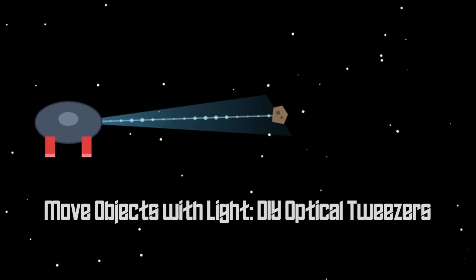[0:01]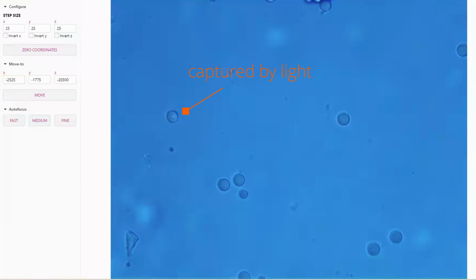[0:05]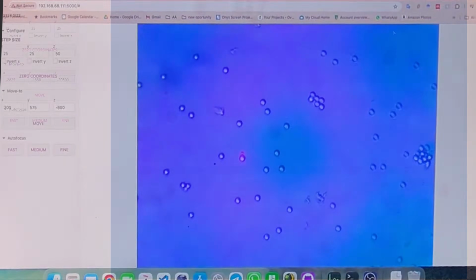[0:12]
What you saw was an optical tweezers that can be built for less than 400 euros. In this video, I'm going to show you how you can build your own device.
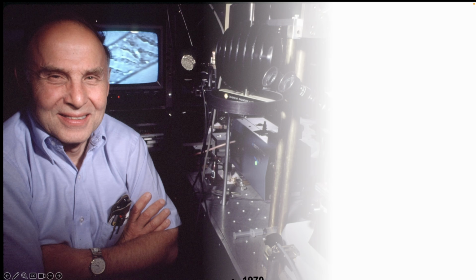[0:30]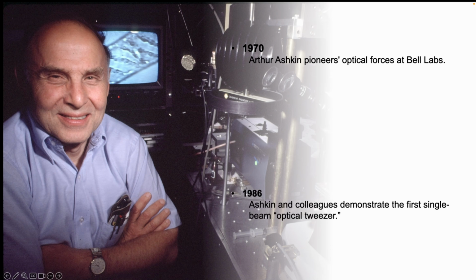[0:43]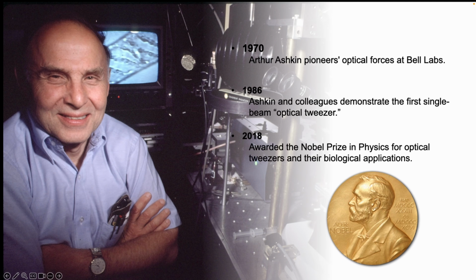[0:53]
A scientist named Arthur Ashkin was a pioneer in this field. In 1970, he showed that light carries momentum and can apply force to a small object. In 1986, he demonstrated the version of optical tweezers that we use today. After many years of application, especially in biology, he received the Nobel Prize in 2018. He's a very important figure in this field, and if you like science stories, I highly recommend watching his Nobel talk in Aspen. I've put the link in the description below.
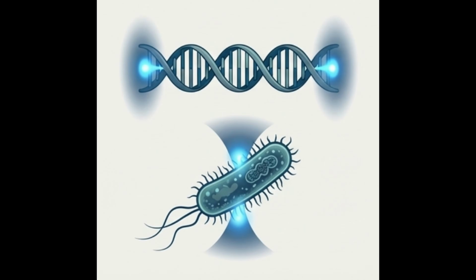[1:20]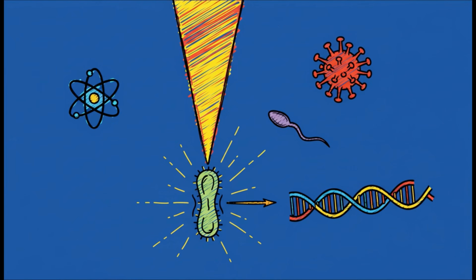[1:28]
It might look like science fiction, a bit like tractor beams in Star Trek. It's amazing that you can move objects just with light. In Ashkin's own description, it's just the focus of a light. With optical tweezers, you can trap anything, a biological sample, even a single atom. The great feature is that it's very gentle. You can trap a single cell, blood cell, bacteria, or sperm cells without damaging them.
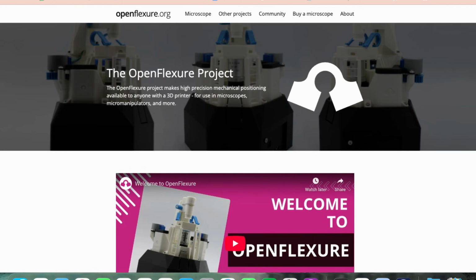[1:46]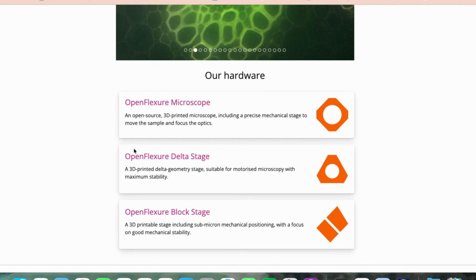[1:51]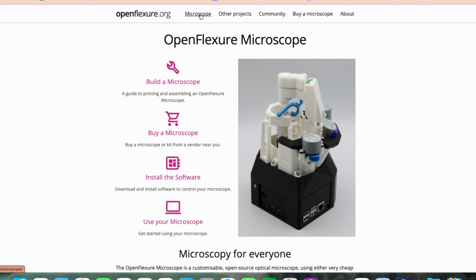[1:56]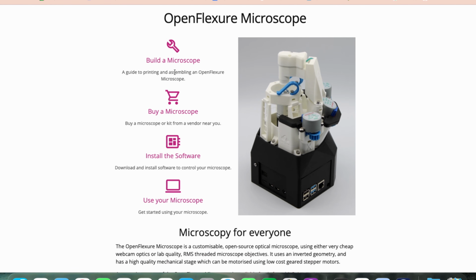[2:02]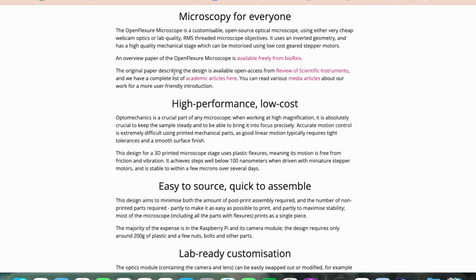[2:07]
But the thing is, these objects are usually too small, 10 times smaller than a human hair, so they're invisible to the naked eye. Therefore, you need a microscope to observe them. To build our optical tweezers, we use the OpenFlexure platform, which is an open source 3D printed microscope. It's developed by a great community and it's used all over the world. It's super stable. There is a lot of documentation that shows you step by step how to build one for around 300 euro.
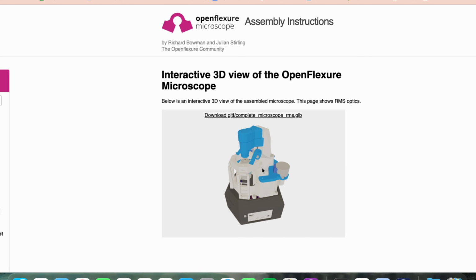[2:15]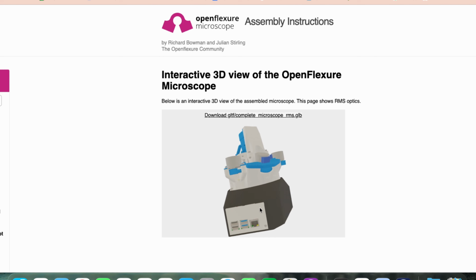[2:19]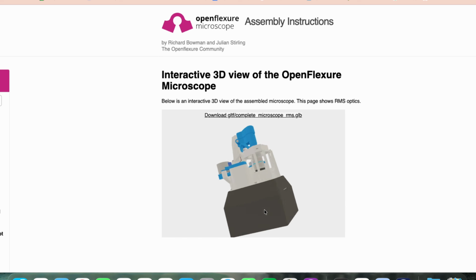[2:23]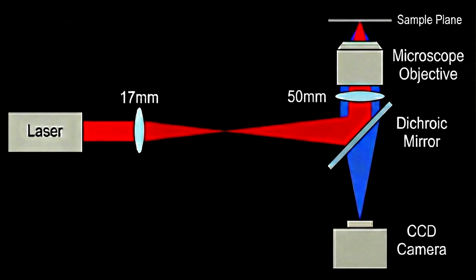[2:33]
If you go to the microscope tab, you see the 3D view of this design. The link is in the description below, but I want to show you that we use the back port of the microscope to add our laser for the optical tweezers. Here you can see a schematic of the design. The blue part shows the normal microscope light. The red path shows the light for the optical tweezers.
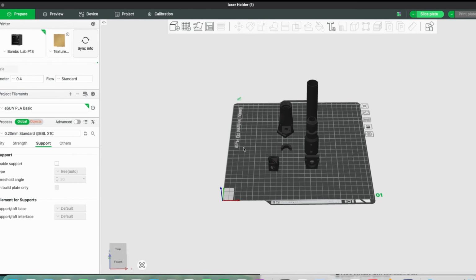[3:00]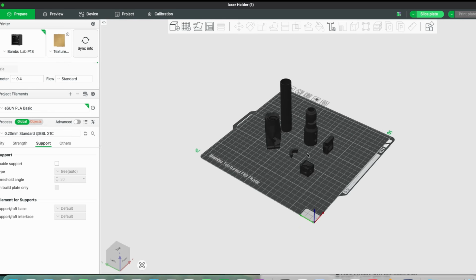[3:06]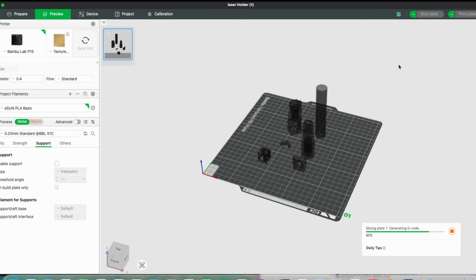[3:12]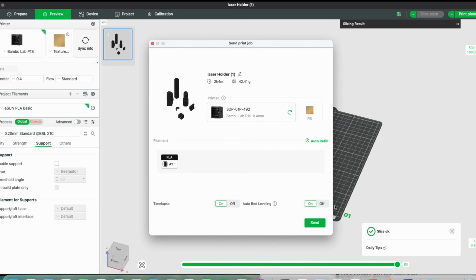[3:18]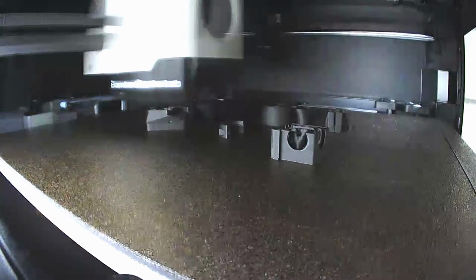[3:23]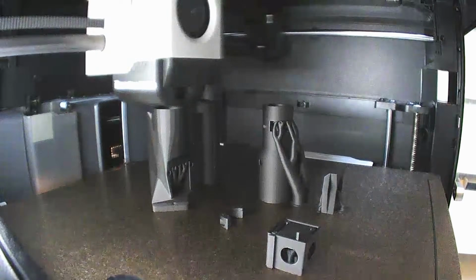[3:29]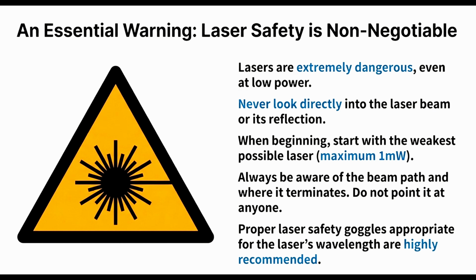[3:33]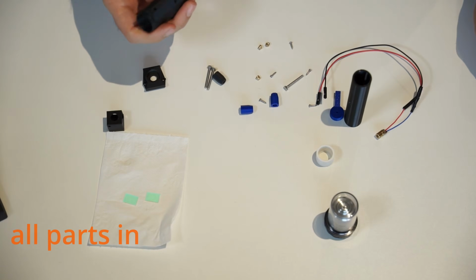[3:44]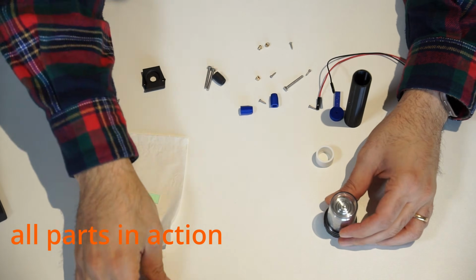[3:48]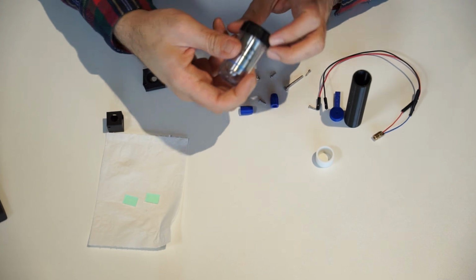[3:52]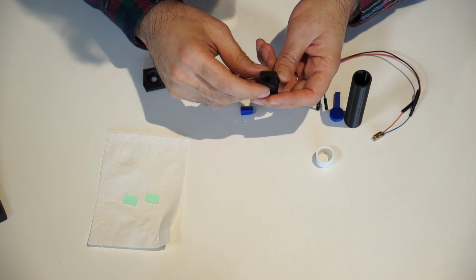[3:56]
Before we dive into the assembly, I need to talk about something important: laser safety. Never directly look at the laser beam, and please do not use more than 1 milliwatt of laser power. First, clean the printed parts so there is no support or debris. Here we use a 60x objective lens from a Chinese manufacturer that costs around 50 to 60 euro.
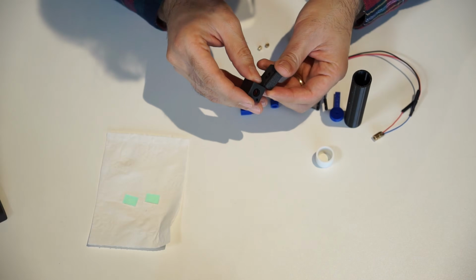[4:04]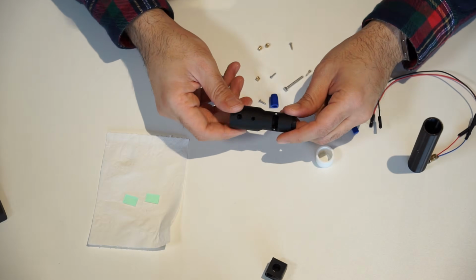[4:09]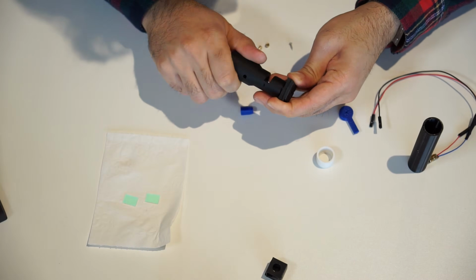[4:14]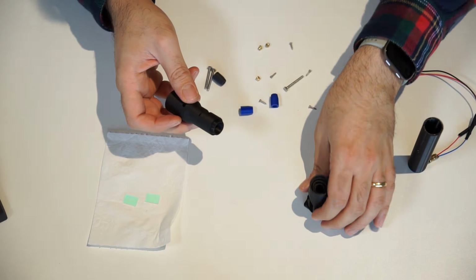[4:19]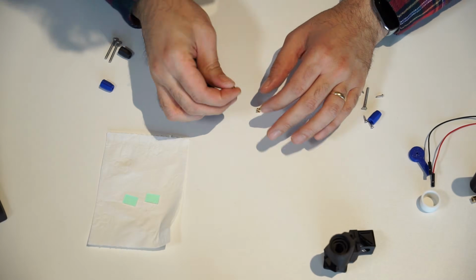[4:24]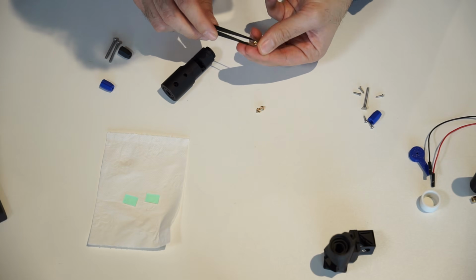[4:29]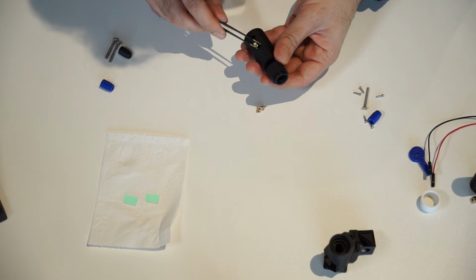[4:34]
For the printed parts, it's a good idea to check that all the parts fit together properly before going further. The cube, for instance, has a sliding mechanism into the coupler. The other side of the coupler is a thread that fits into the laser holder. The laser holder is actually designed with two parallel tubes. The inner tube is where we mount the laser, and the outer tube acts as a reference tube to adjust the laser angle. These two tubes are connected by a few flexible joints such that it gives us a few degrees of control on the alignment.
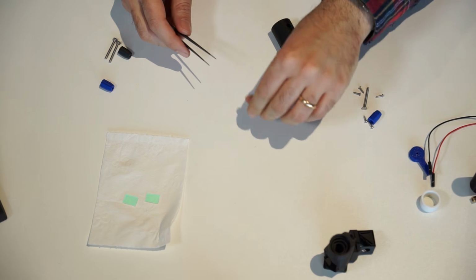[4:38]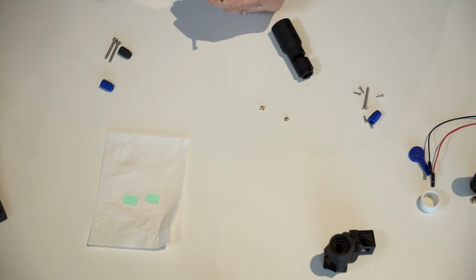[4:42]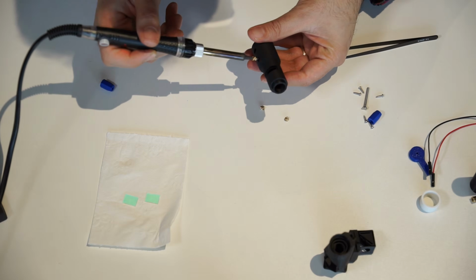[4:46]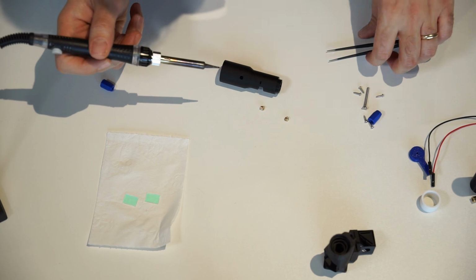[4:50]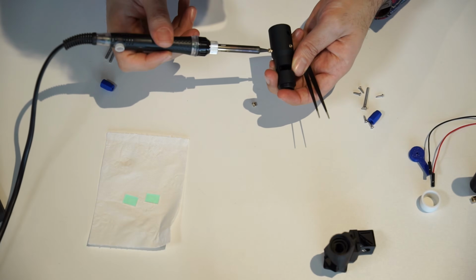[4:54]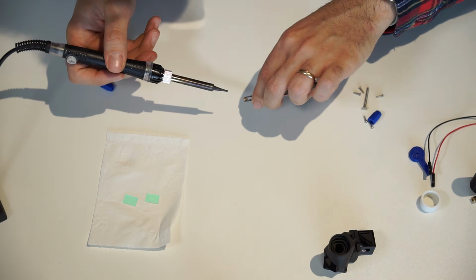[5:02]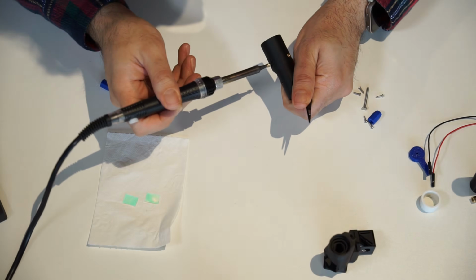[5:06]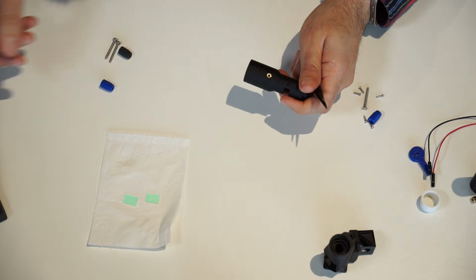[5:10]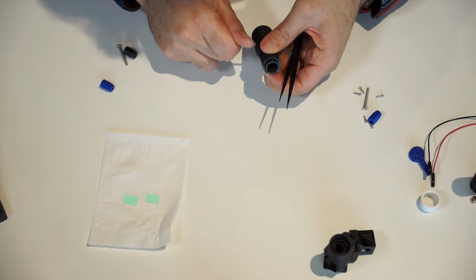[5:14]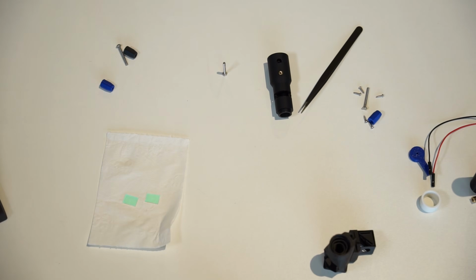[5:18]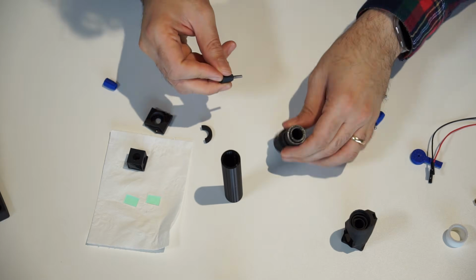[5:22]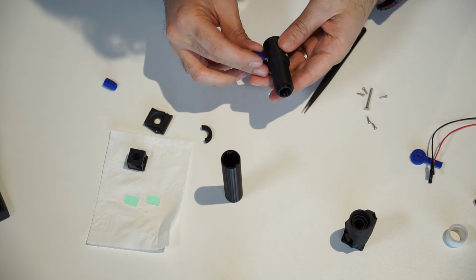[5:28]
To get better control over the laser alignment, we use heat-set insert nuts. I actually find it easier to heat the insert nut with a soldering iron and gently push it into the laser holder. You need 3 of them, every 120 degrees, and you should not push too much, to avoid damaging the plastic parts. And the last one. There you go. Now you can check all of them with a screw to make sure they are not blocked or clogged. These are the same types of screw that have been used in the microscope leg and the condenser part, and the same type of thumb screw has been used as well.
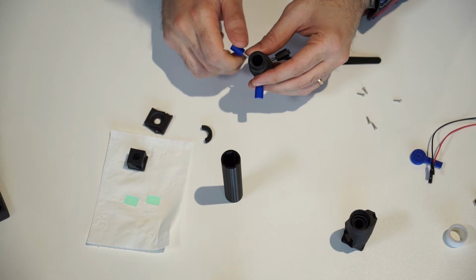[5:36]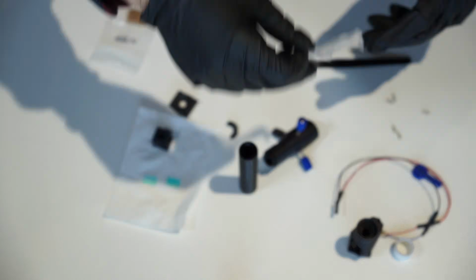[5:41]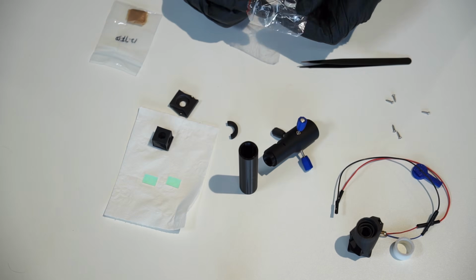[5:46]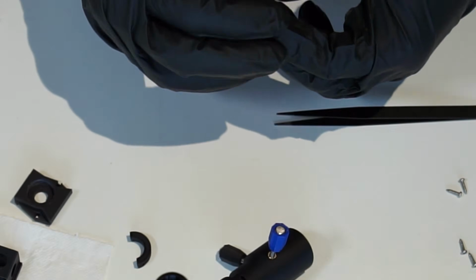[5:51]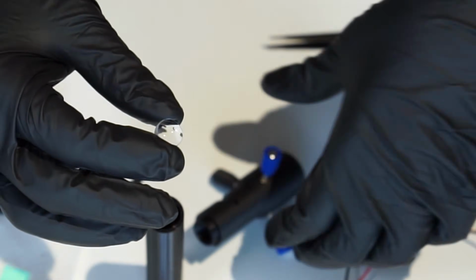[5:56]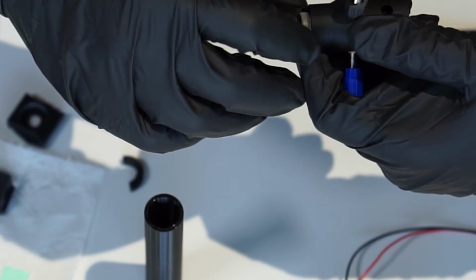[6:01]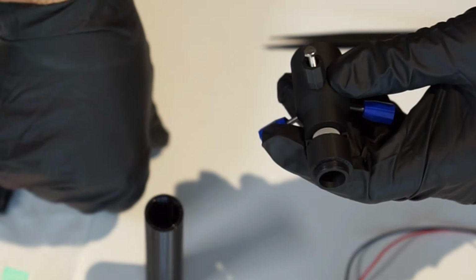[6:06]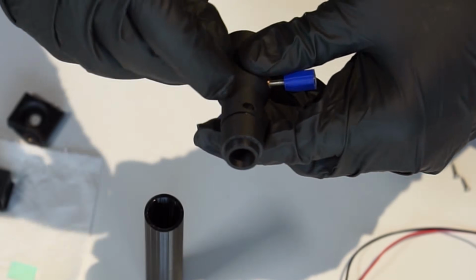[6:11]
Now is the time for the optics. We need two lenses and a dichroic mirror. First, we use a 1/2 inch doublet lens with 17mm focal length. They have a curved side and a flatter side, and the rule is the curved side should face the collimated beam, basically the incoming laser light. After placing the lens, put the lens cap in and fix it into place. The screws just need to be loose, not pushing anything.
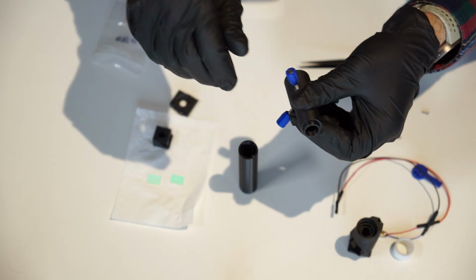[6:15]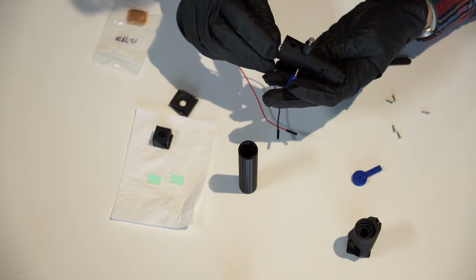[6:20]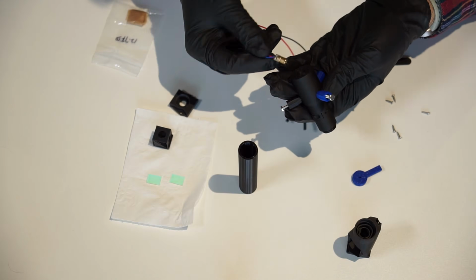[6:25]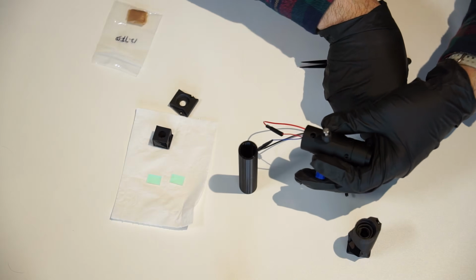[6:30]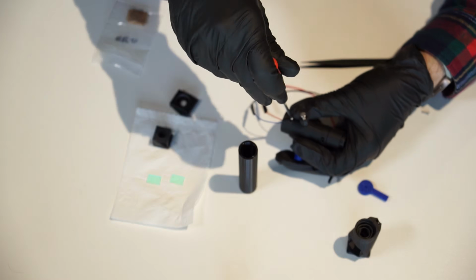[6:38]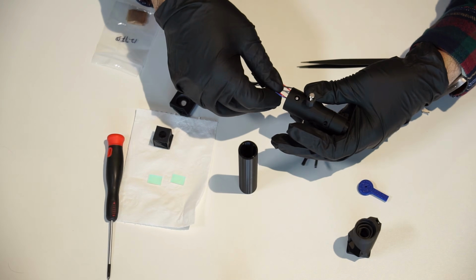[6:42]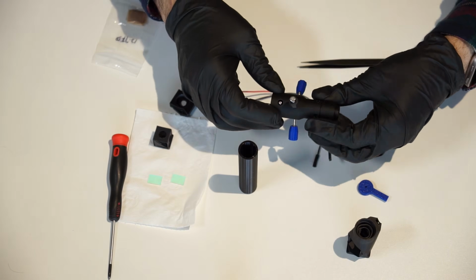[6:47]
Good. Next is the laser. We use a 6mm diameter red laser pointer with a wavelength of 635 nanometers and a maximum of 1 mW. They are pretty cheap, about 50 cents each. Fix the laser in the holder with the M2 tap screw. The laser should not move anymore and just needs to be fixed in position. If the laser doesn't move, the laser holder is ready and we move to the cube.
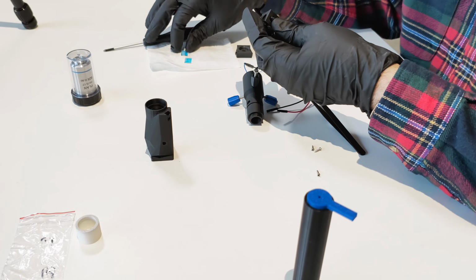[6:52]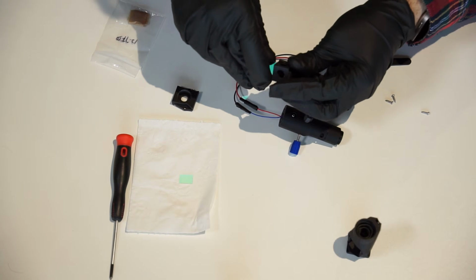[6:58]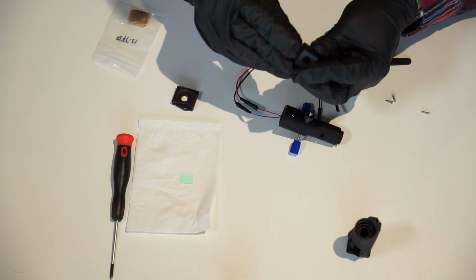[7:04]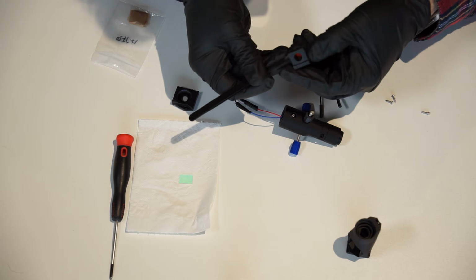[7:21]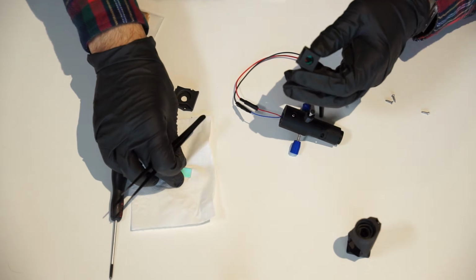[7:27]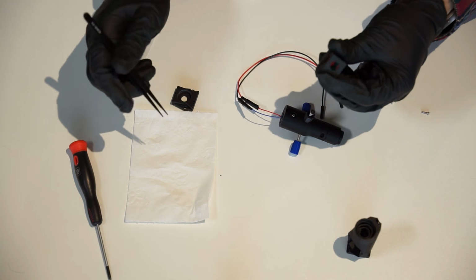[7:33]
The cube has two slots for the optics, a dichroic mirror and a filter. The dichroic mirror is chosen to match the laser wavelength. In this case, it reflects red light and transmits blue and green. I found them pretty cheap on AliExpress, about €1 each. It's good to mention that dichroic mirrors have two sides. The coated side has better efficiency, and you can usually find it with a phone light or flashlight. Try to place the dichroic mirror in the middle of the light path, or in the middle of the holes.
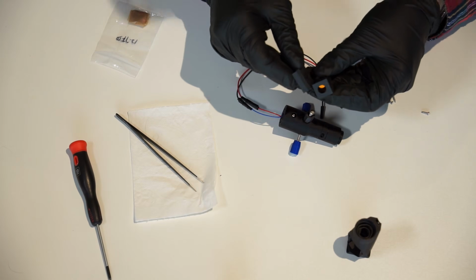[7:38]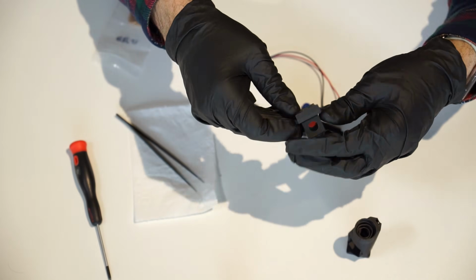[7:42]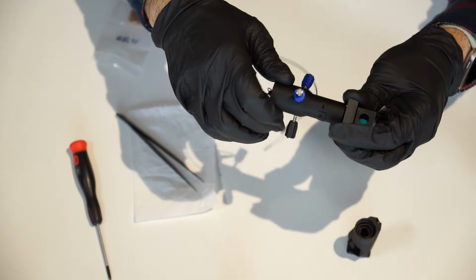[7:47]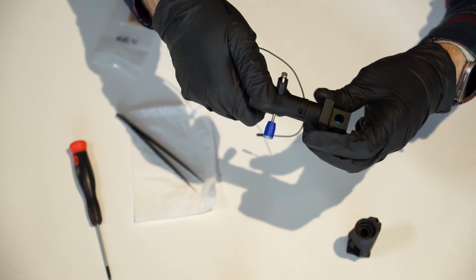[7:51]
We noticed actually quite a lot of back reflection into the camera, so we decided to use two dichroic mirrors. One acts as the main mirror and the second one works as a filter. If you can, it's better to use a proper filter actually.
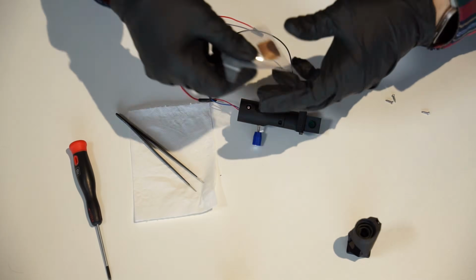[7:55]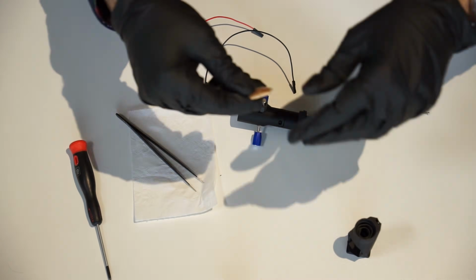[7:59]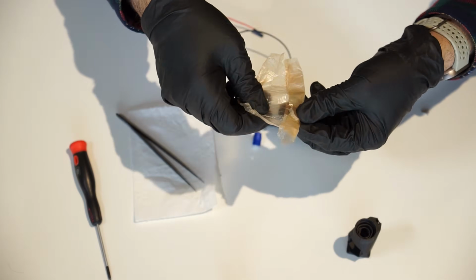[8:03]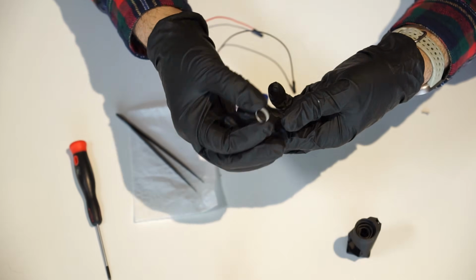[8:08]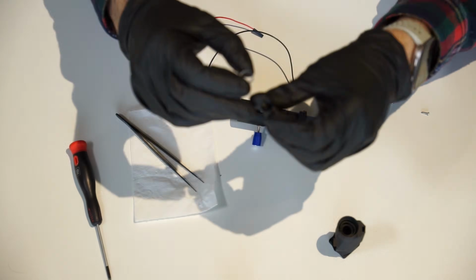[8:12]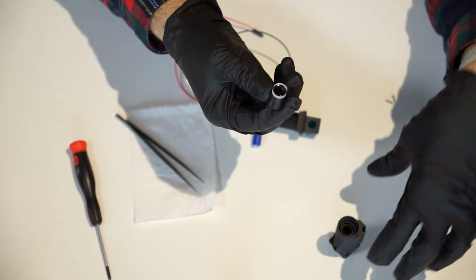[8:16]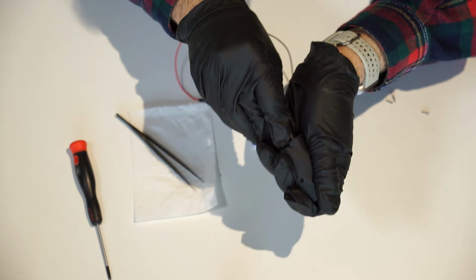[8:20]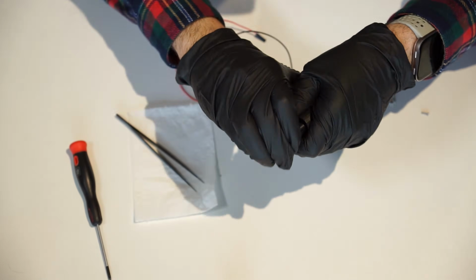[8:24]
Now it's time for the 1/2 inch 50mm focal lens, exactly as described in the OpenFlexure high-resolution microscope design. It helps us to collimate our laser light, and as the rule said, the curved side must face the collimated light. So in this case, the curved side needs to be on the top, or opposite of the laser direction.
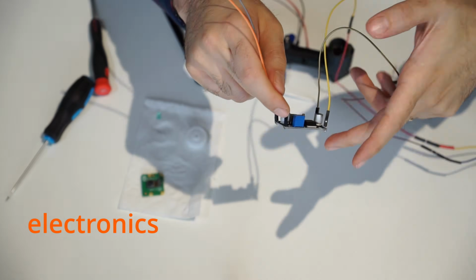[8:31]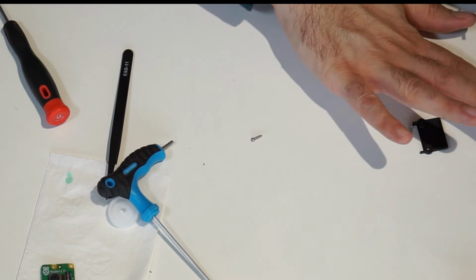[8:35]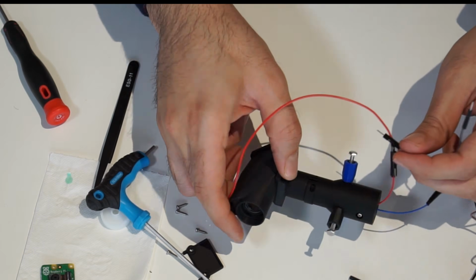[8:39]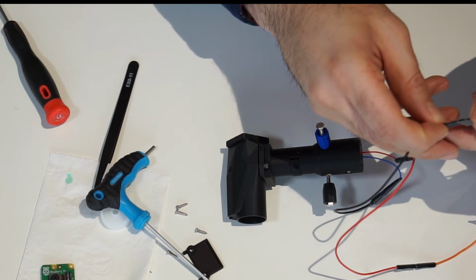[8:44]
We actually do not have so many electronics. Some of these cheap laser modules do not run on exactly 5 volts. With a DC-DC converter, you can adjust the voltage to what the laser needs. Optionally, you can place a key to have control on turning the laser on and off.
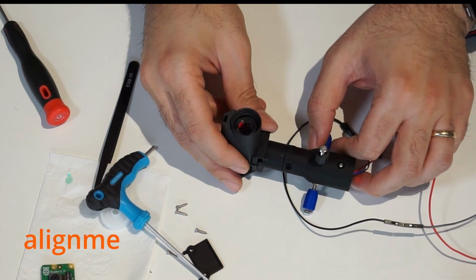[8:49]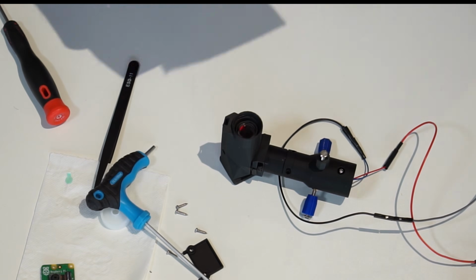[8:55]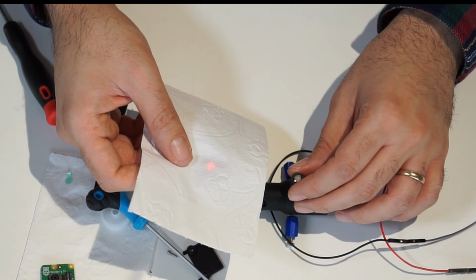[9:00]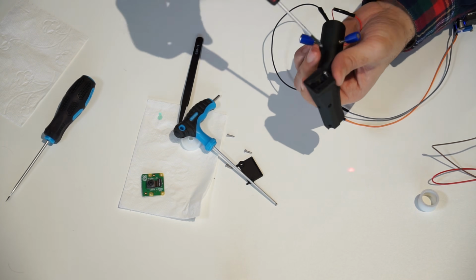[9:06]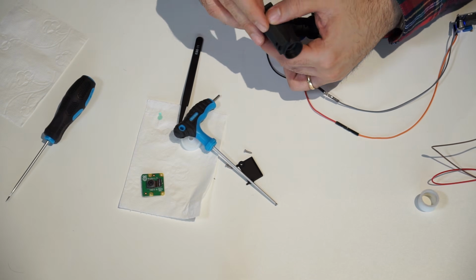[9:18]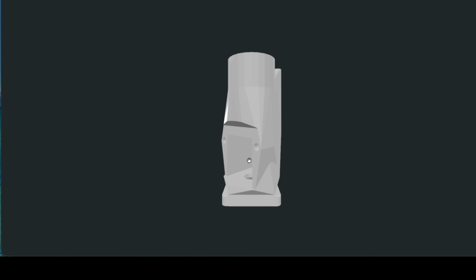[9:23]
The fun part starts. At first, the laser spot looks off to the side. Our goal is to center the laser in the optical module so that the beam enters the back of the objective lens and travels straight along its axis. To do so, we align the beam at 2 points to make sure that the light travels in parallel to the objective lens. To properly control a beam, we usually need 2 degrees of freedom. We found that just moving the laser itself is not enough, so we designed the cube to be slightly flexible too, and with 2 M2 screws, we can adjust the angle of the dichroic mirror.
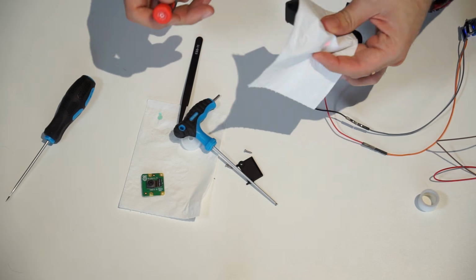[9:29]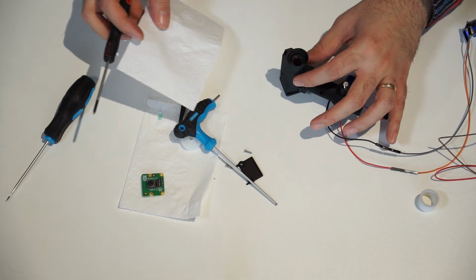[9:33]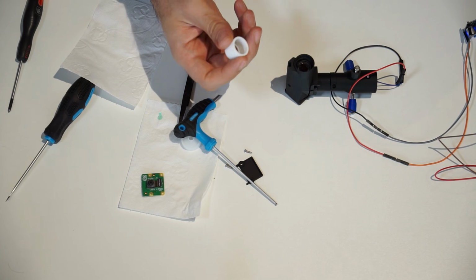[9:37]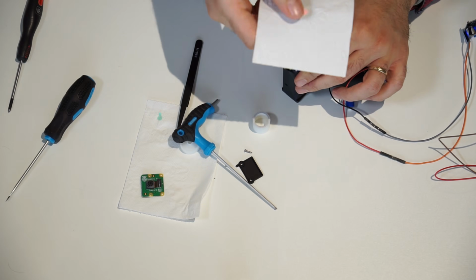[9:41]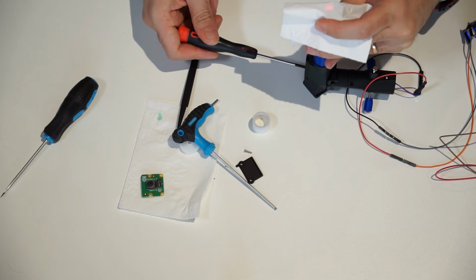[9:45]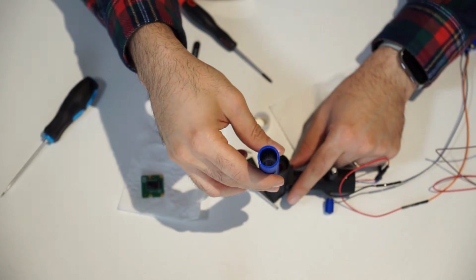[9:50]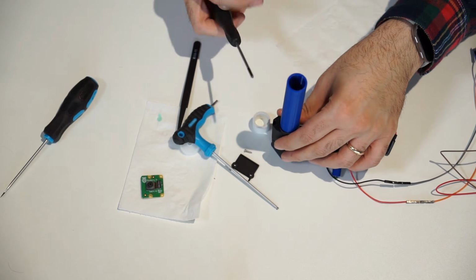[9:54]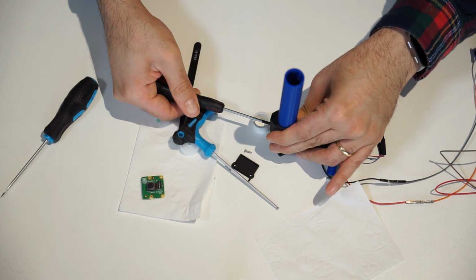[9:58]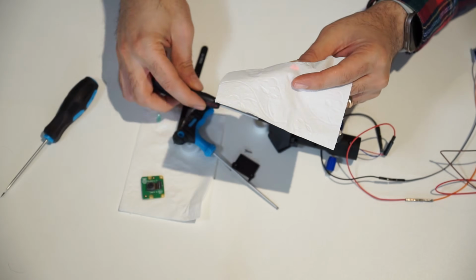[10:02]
Now we need the alignment tubes. Place them in place of the objective lens. With the long tube, you align the beam at the further point, or the cube part, with the 2 M2 screws, and then closer to the lens, you should center the beam with the 3 screws on the laser holder. You at least need to repeat the process a couple of times until you make sure the laser is centered in both the short and long tube.
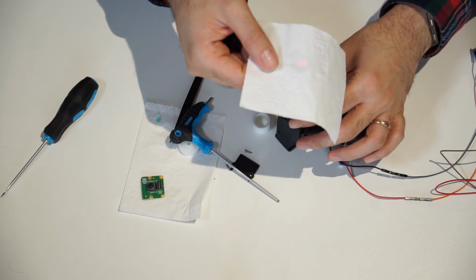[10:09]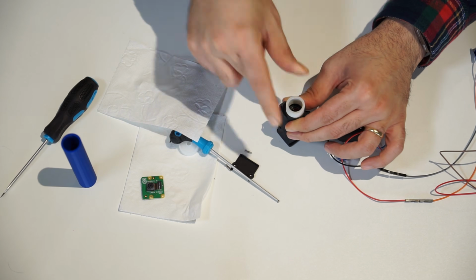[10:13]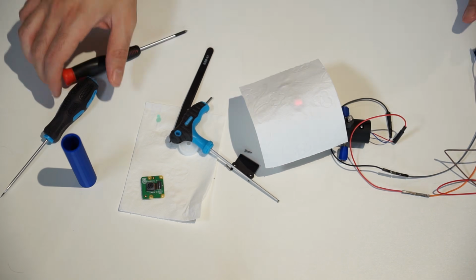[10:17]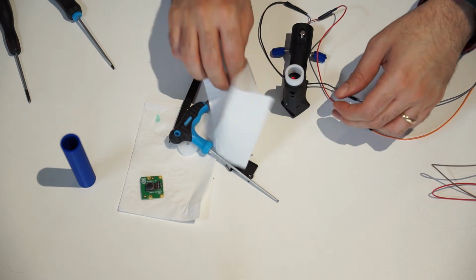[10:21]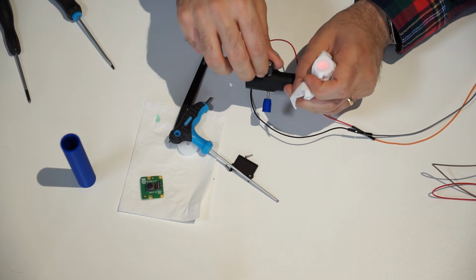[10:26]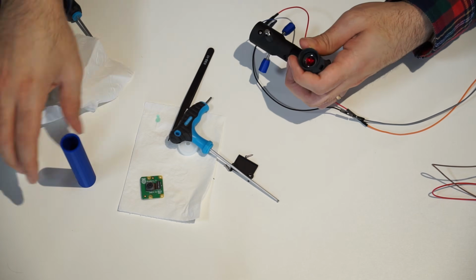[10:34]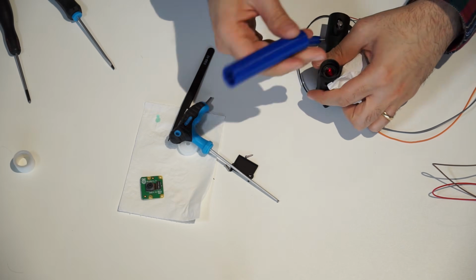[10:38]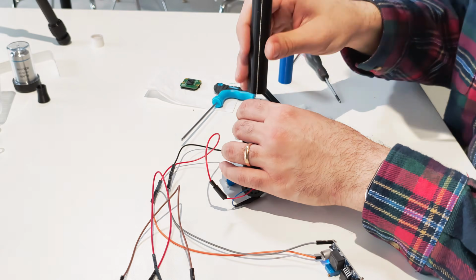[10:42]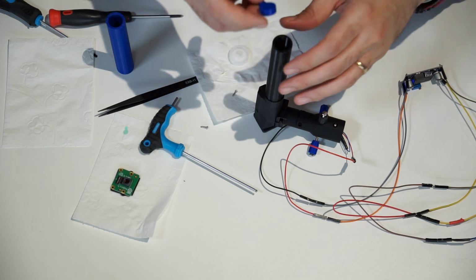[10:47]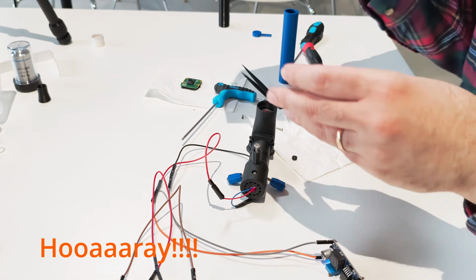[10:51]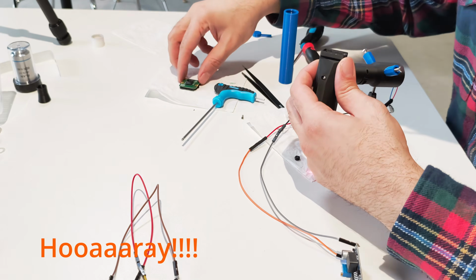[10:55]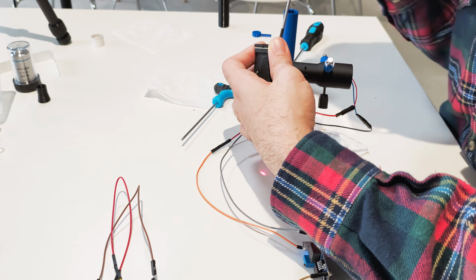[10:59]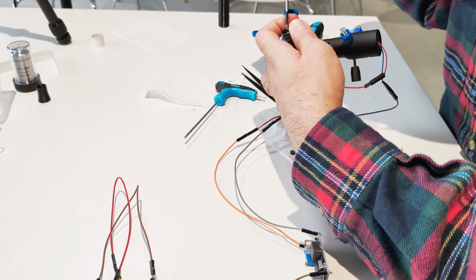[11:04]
For better precision, you can print an alignment tube with a 1mm pinhole and a small cap where you can reach better accuracy. If the laser passes through both pinholes, your beam is well aligned. Once the alignment is done, you can put the camera in exactly how it is explained on the OpenFlexure website.
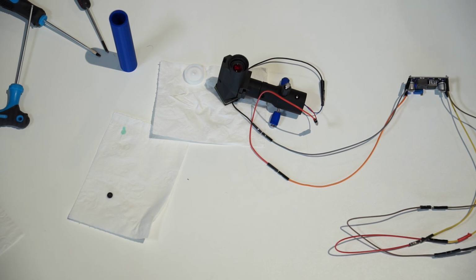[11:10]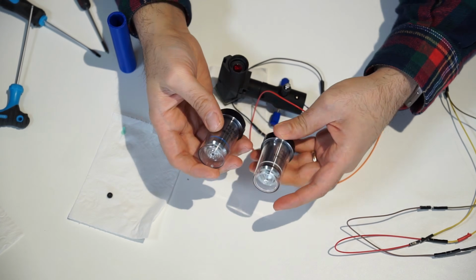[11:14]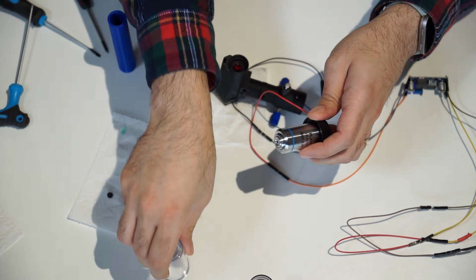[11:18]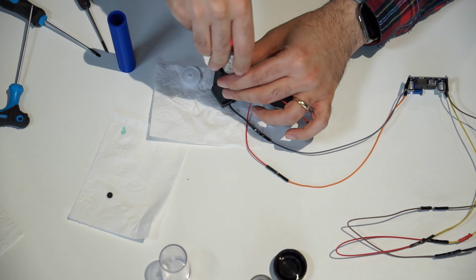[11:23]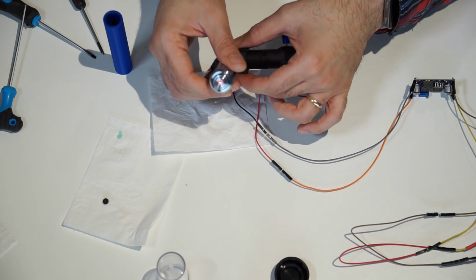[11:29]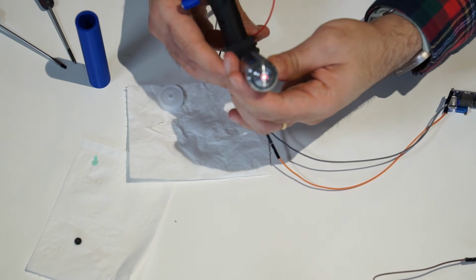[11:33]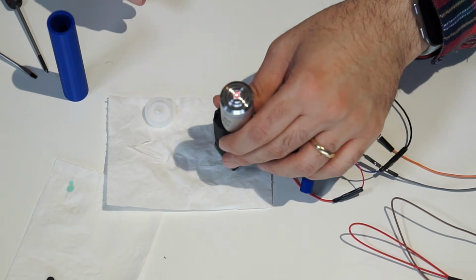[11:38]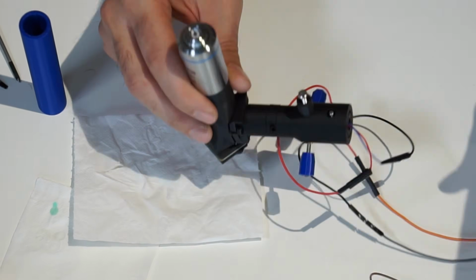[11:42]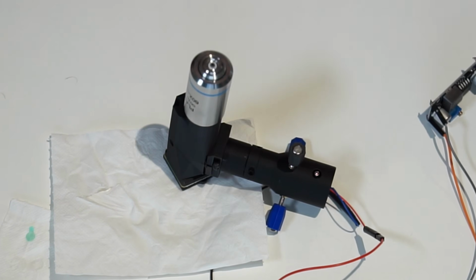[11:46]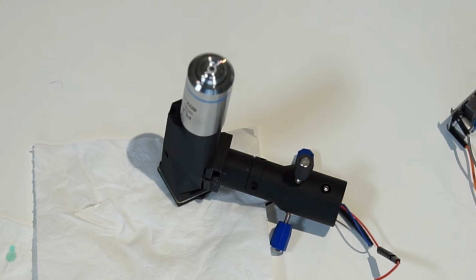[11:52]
I'm using a 60x objective lens because it's more convenient, but a 100x oil immersion lens gives you a tighter focus of the beam, so a stronger trap. A small fact: objective lenses are color coded, 100x has a white ring and 60x has a blue ring. The objective lens is really the heart of this microscope. The high quality ones from major brands can be very expensive, but we got quite good results with these Chinese infinity corrected plan objectives. For an optical trap, you usually want to have at least numerical aperture 0.8. That gives you a focus spot around 1 micron in size for a red laser.
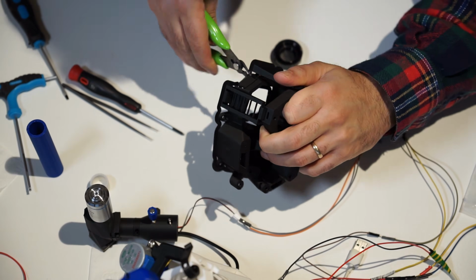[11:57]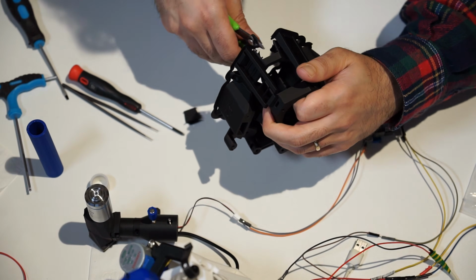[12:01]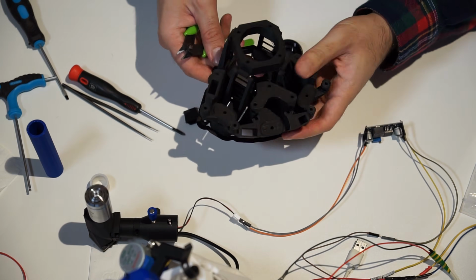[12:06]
I'm assuming you already have your OpenFlexure microscope built. To make space for the laser holder, you just need to cut away the extra plastic around the side of the port in the main body and the base.
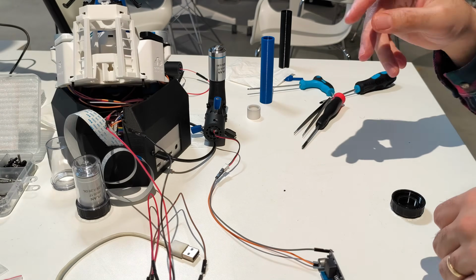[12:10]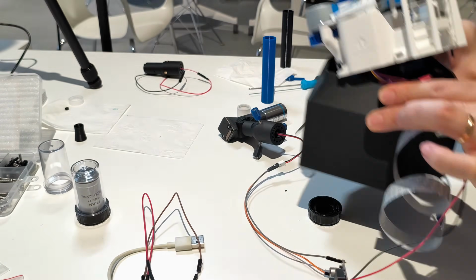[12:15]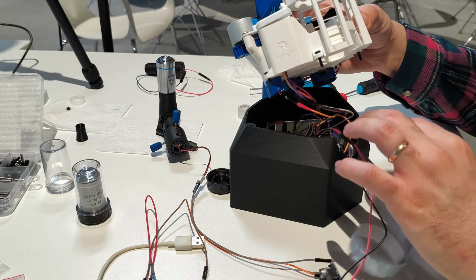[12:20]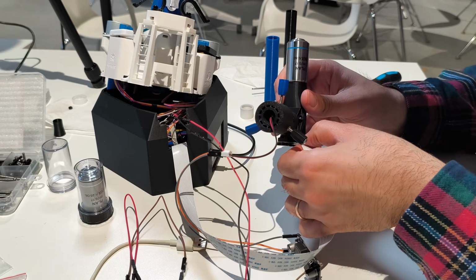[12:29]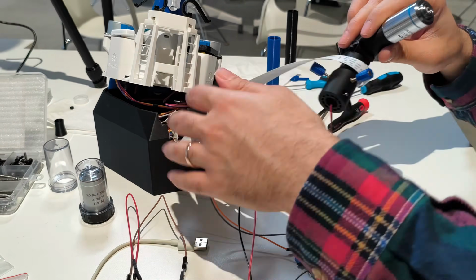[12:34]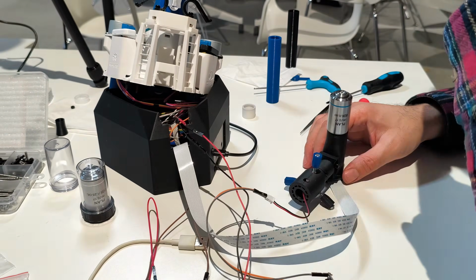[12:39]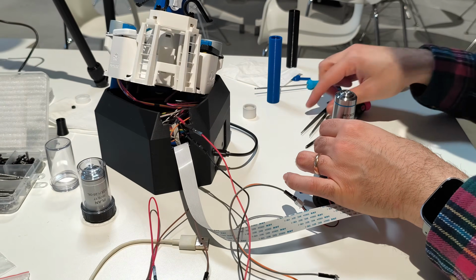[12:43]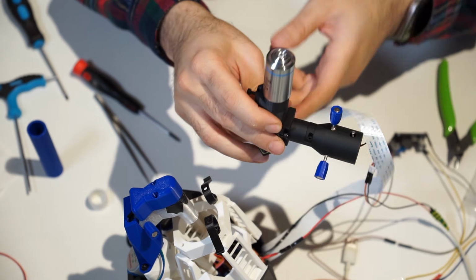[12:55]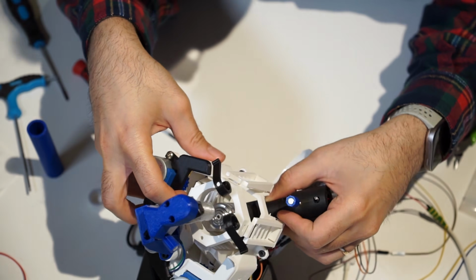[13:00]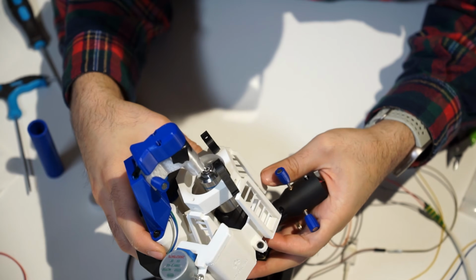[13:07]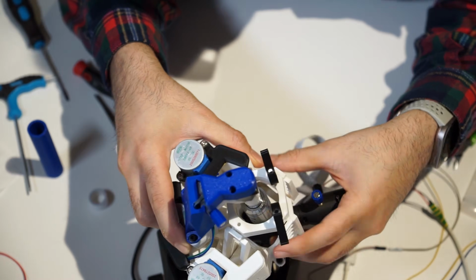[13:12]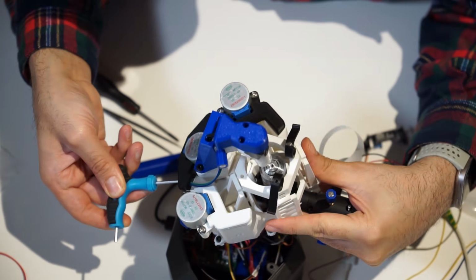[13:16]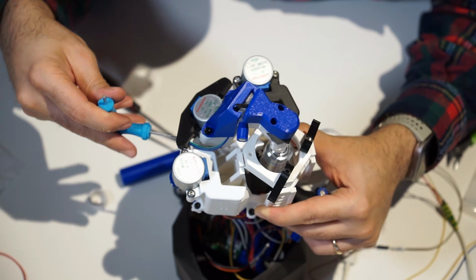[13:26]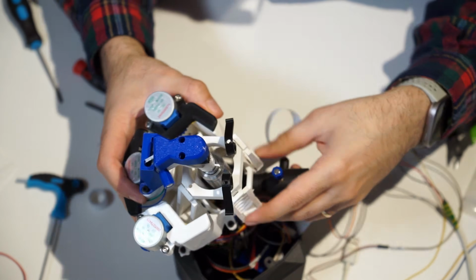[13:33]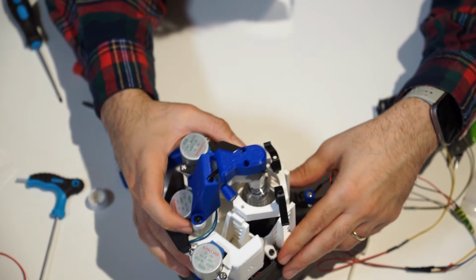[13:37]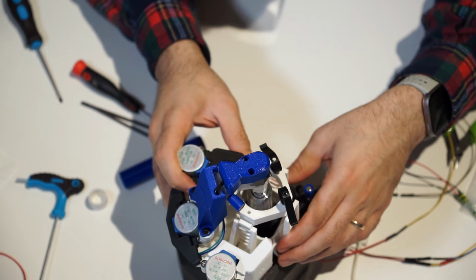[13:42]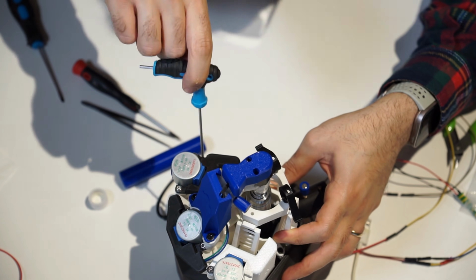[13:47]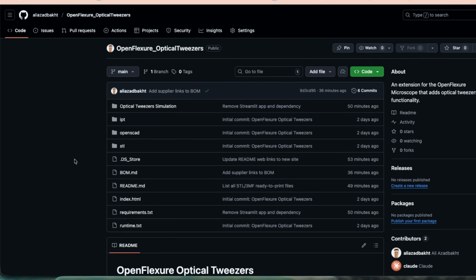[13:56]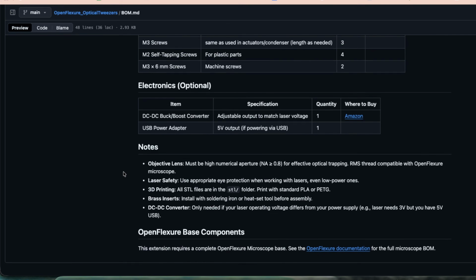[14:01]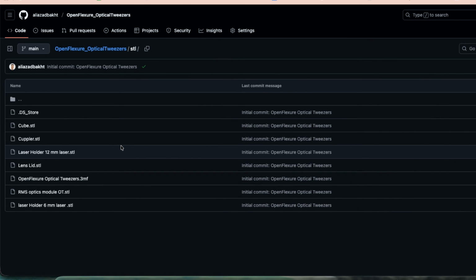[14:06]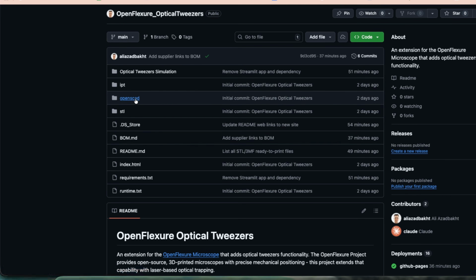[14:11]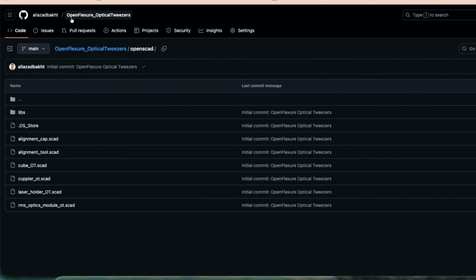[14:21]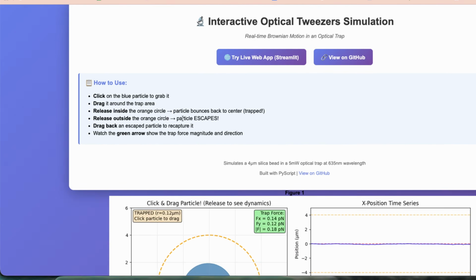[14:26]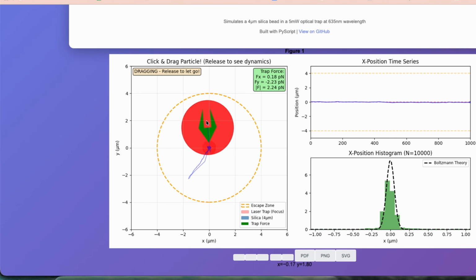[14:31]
We listed all the required parts and the bill of materials with the links where you can buy them on our GitHub page. You can also find the SCAD, STL, and IPT files for the print. Keep in mind that the SCAD files use libraries from OpenFlexure and ThreadSCAD, so you need to download them and put them in one place. We also made a very small simulation that shows Brownian motion of the trapped particle and the forces acting on it.
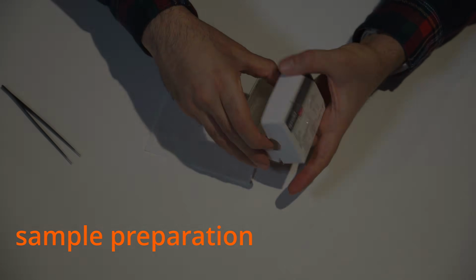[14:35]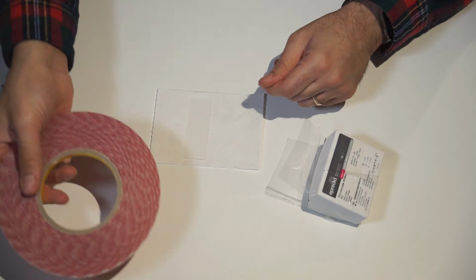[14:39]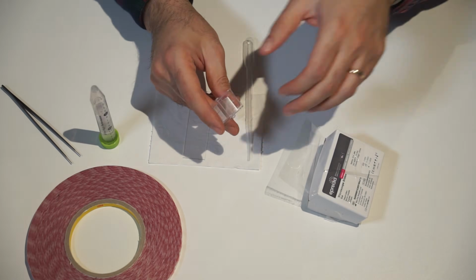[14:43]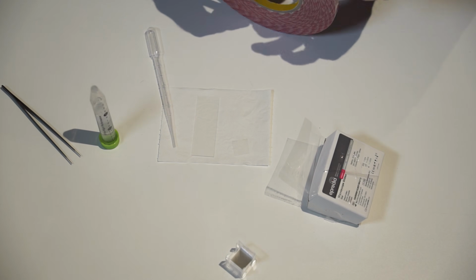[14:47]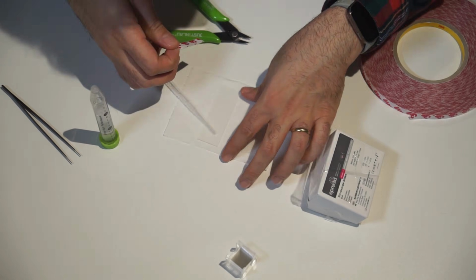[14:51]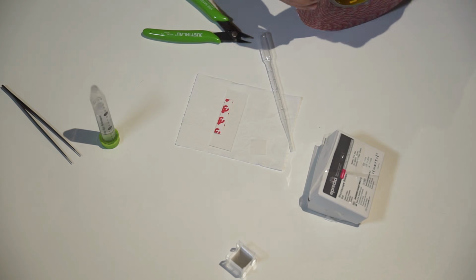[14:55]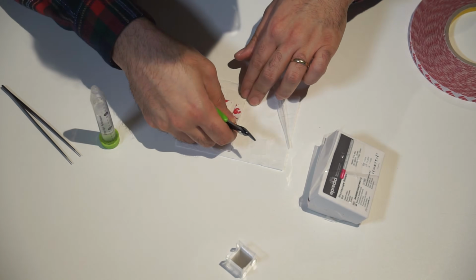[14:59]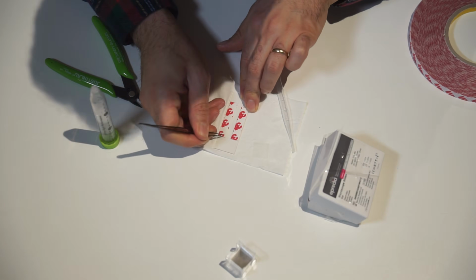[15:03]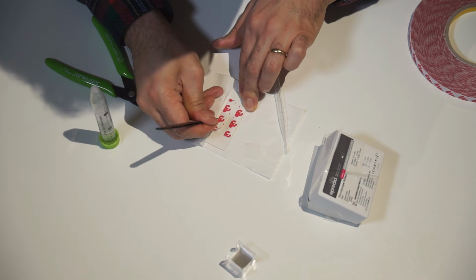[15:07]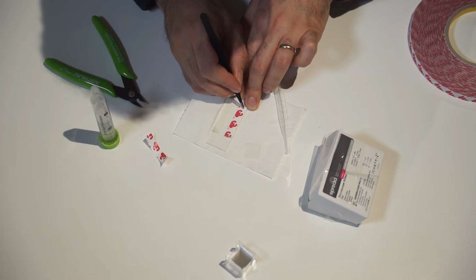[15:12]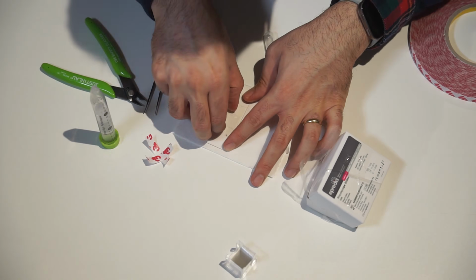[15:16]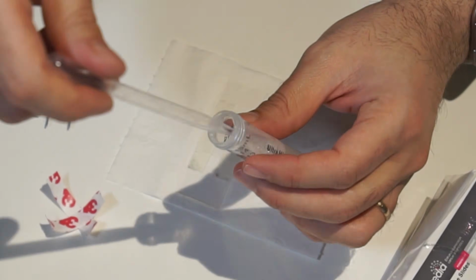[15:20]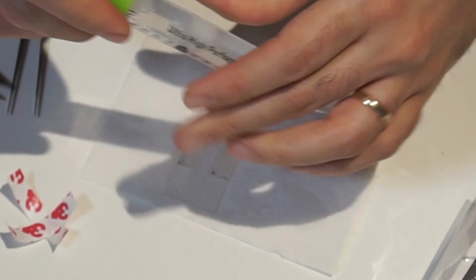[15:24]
Now I will show you how to prepare a sample. For that you need a microscope slide, a cover glass, ideally cover slip number 1.5 because most of the objectives are optimized for that thickness, and double-sided tape. We use the tape to create a small spacer on the slide. Then place the cover slip on the tape. This creates a very thin chamber between the slide and the cover slip. If you put a droplet of your sample at the edge of the cover slip, it will flow into your sample by capillary action. In this example, our sample is a small colloidal bead about 4 micrometers in diameter made of silicon oxide in normal tap water.
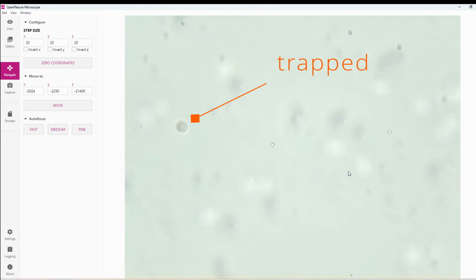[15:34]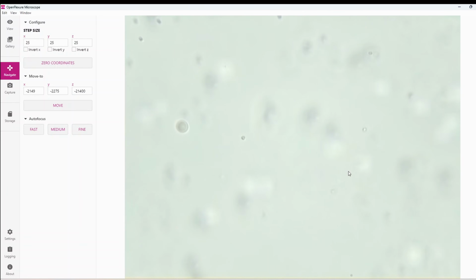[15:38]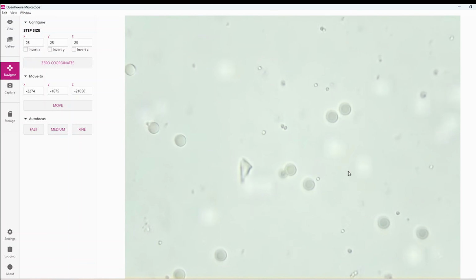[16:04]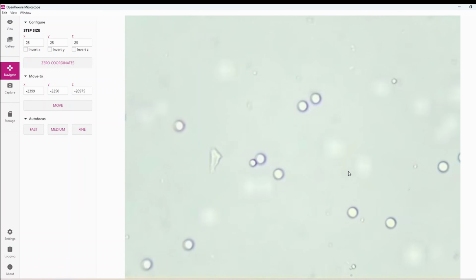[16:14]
Here is what the sample looks like under the microscope. The optical trap is on the left side of the image, and you can see the sample is not super clean because it's just tap water, but it's good enough to show the performance of the trap. To drag an object with this optical trap, I'm moving the stage and the sample with respect to a fixed trap. It's better to reduce the step size so that while moving the stage, the particle does not escape from the trap. By pulling the trapped object through the fluid, you can get a feeling for the viscosity, for instance, how thick or thin the sample is. It's like having a tiny hand inside your sample.
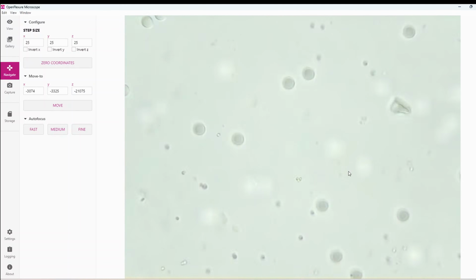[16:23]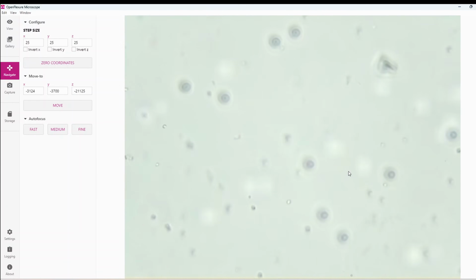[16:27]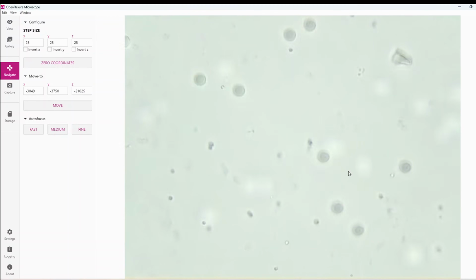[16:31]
So far, optical tweezers have been a research instrument. Most applications of optical tweezers have been in the labs. A famous example is stretching a single DNA molecule and studying how proteins interact with it. Optical tweezers is actually good to measure forces from about femtonewtons, 10 to the power of minus 15 newton, up to hundreds of piconewtons. That is it for this build.